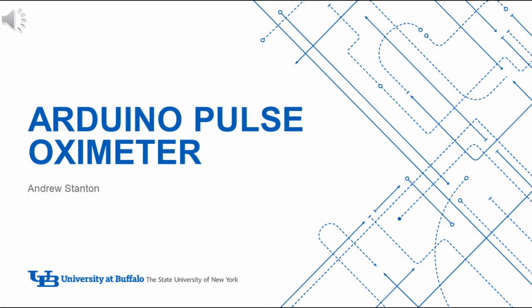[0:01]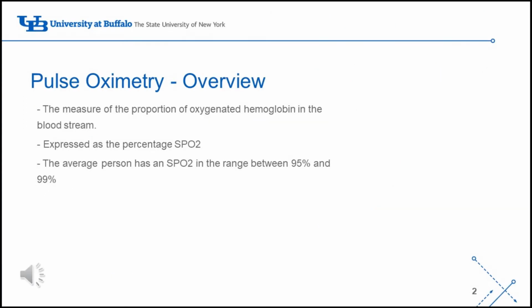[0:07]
Hi, my name is Andrew Stanton and I'm here today to present my Arduino-based Pulse Oximeter project. Just a quick overview, pulse oximetry is the measure of oxygenated red blood cells in your bloodstream. The average person has an SpO2 between 95 and 99%.
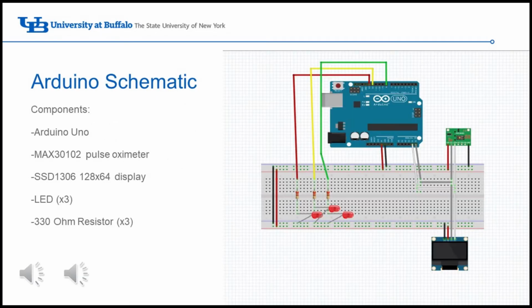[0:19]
Now, as you can see in the schematic, my system utilizes an Arduino Uno, a MAX30102 pulse oximeter device, a SSD1306 128 by 64 display, 3 LEDs, and 330 ohm resistors in series with those LEDs.
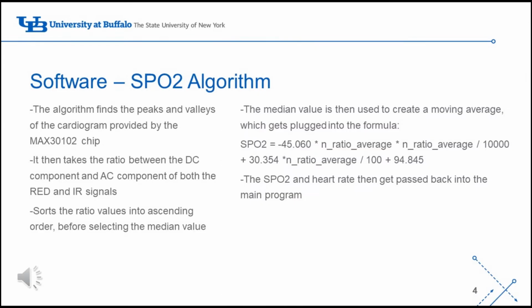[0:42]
Moving on to the software, this product utilizes the SparkFun MAX30102 library to calculate the blood oxygen content. This algorithm functions by finding the peaks and valleys of the cardiogram provided by the MAX30102 chip. It then takes the ratio between the DC and AC component of both the red and infrared signals, sorts the ratio values into ascending order before selecting the median value.
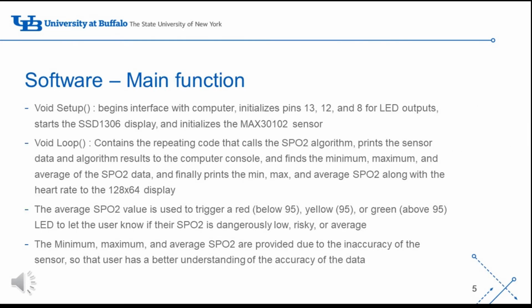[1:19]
The median value is then used to create a moving average which gets plugged into the formula below. The SpO2 and heart rate then get passed back to the main program. As for the main program, void setup begins interface with a computer, initializes pins 13, 12, and 8 for LED outputs, starts the SSD1306 display, and initializes the sensor.
The looping program contains the repeating code that calls the SpO2 algorithm, prints the sensor data and algorithm results to the computer console, and finds the maximum, minimum, and average of the SpO2 data. It finally then prints the max, minimum, and average, along with the heart rate to the 128 by 64 display.
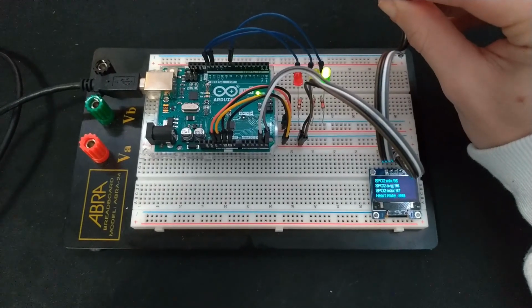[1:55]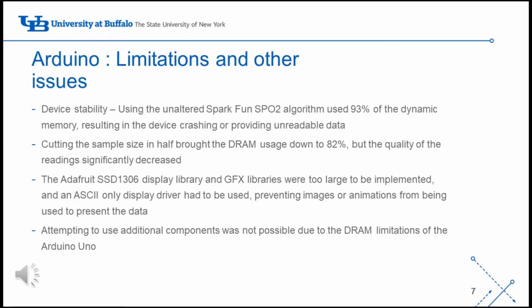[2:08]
Here's just a quick demonstration of the pulse oximeter in action. As you can see, the data on the display and the green LED is lit for the SpO2 being above 95. The Arduino platform proved to be very limiting in its applications due to its low processing speed and small amount of dynamic memory. The dynamic memory prevented any meaningful modifications from being made to the project.
My initial intention had been to make an NFC reading device that would both read and save the previous pulse oximetry data to an RFID tag. However, the limitation in memory prevented that from functioning. Additionally, the device proved to have stability issues when more than 80% of the dynamic memory was being used, with the original unaltered SpO2 algorithm causing frequent device crashes and unreadable data.
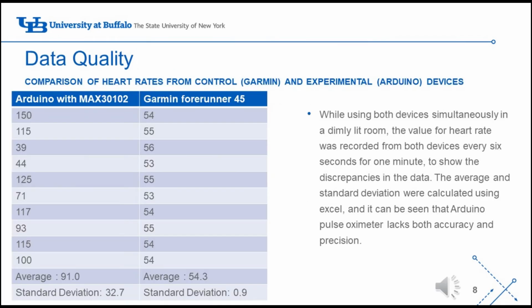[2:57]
Another issue with the project was the low accuracy and low precision of the data collected. I measured the heart rate every 6 seconds on both the Arduino and a watch that has a laser heart rate sensor over the course of a minute. The 10 values, as you can see, wildly differ for the Arduino, while the control device were very consistent.
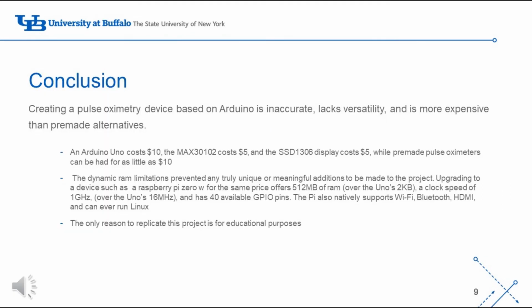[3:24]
As for the conclusion, creating a pulse oximetry device based off Arduino is not recommended as the platform is inaccurate, it lacks versatility, and is more expensive than pre-made alternatives. The Arduino alone costs $10, which is as much as some pre-made other pulse oximeters that have a much higher accuracy. Also, the dynamic RAM limitations, as well as the processing limitations, prevented any meaningful modifications from being implemented in this project. The only reason to replicate this project would be for educational purposes.